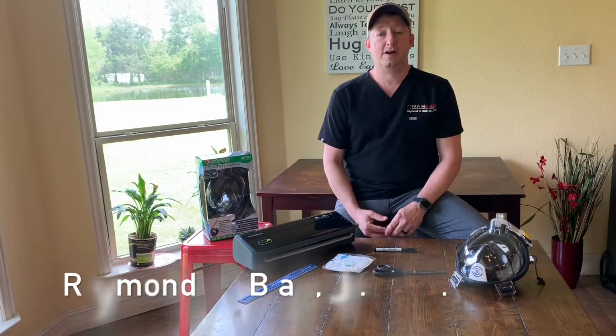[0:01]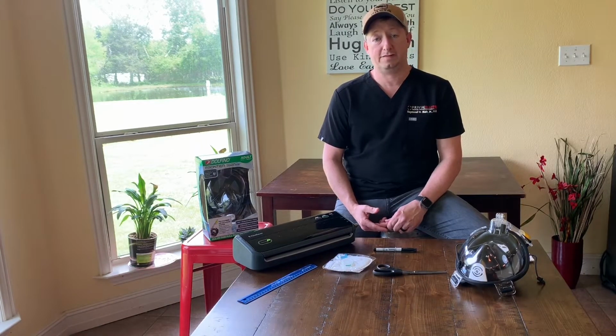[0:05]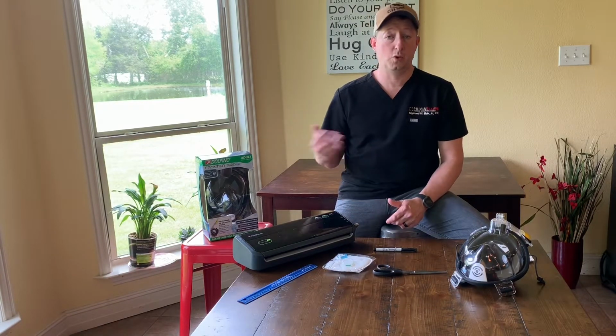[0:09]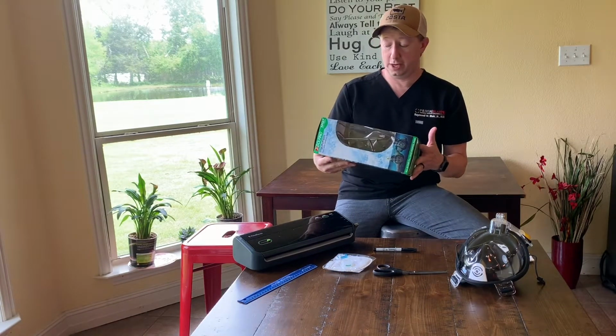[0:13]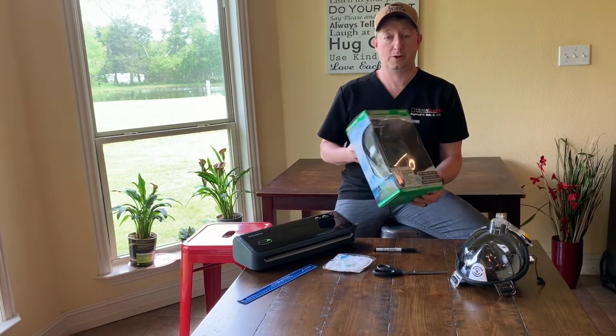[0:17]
I just wanted to show you what I'm doing to make my N95 mask last longer and how to make a reusable face shield out of a simple snorkeling mask. Basically, you can get this mask at Walmart. I got this one there for $35. I'm sure some other retailers have similar products.
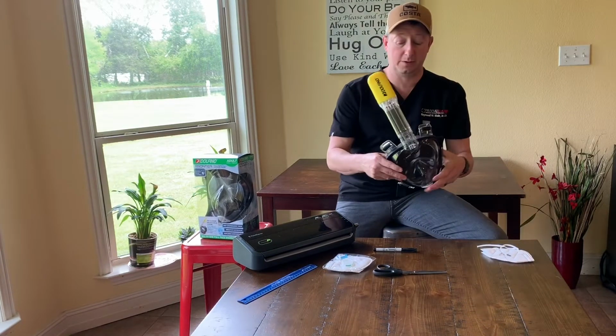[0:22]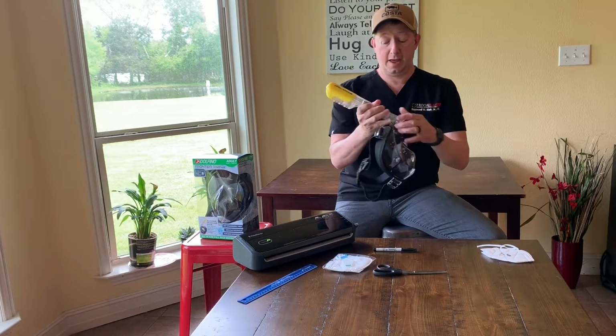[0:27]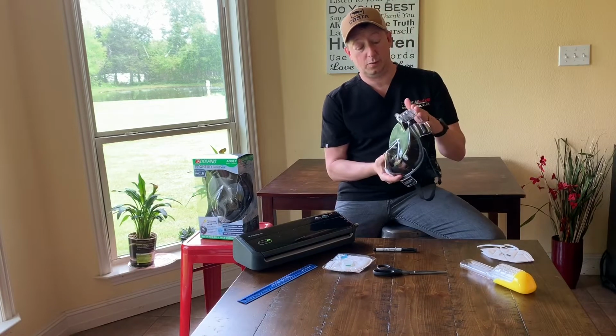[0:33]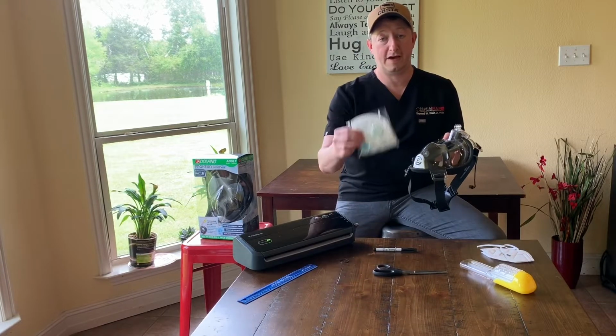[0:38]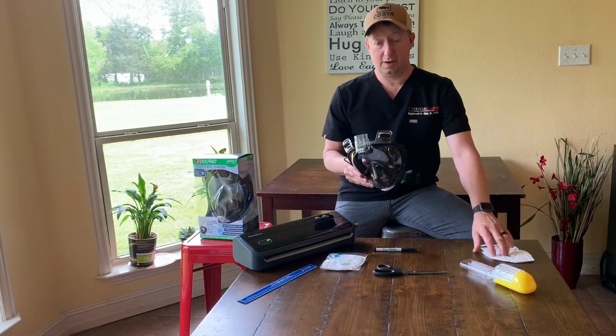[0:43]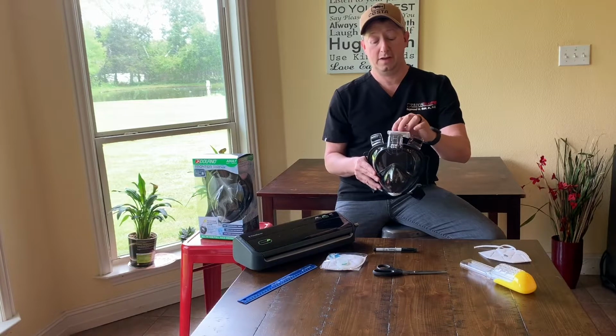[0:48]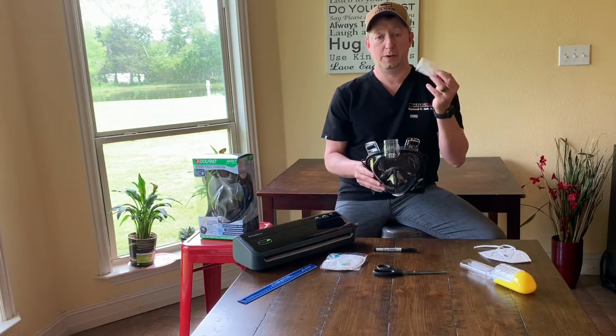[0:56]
These work great. If you take a look at this one that's assembled, you can see here's the snorkel. We never even assembled that onto the mask. And what we've got here is a mask where the intake chamber would be here at the top, and we've got a small valve similar to what you have on your N95 mask for whenever you breathe out. So all we're going to do is take our N95 masks and make them into smaller pieces so we can cover this, use a rubber band and or tape to hold it and make a good seal, and then you've got your mask and you're ready to go, and you can just simply replace this.
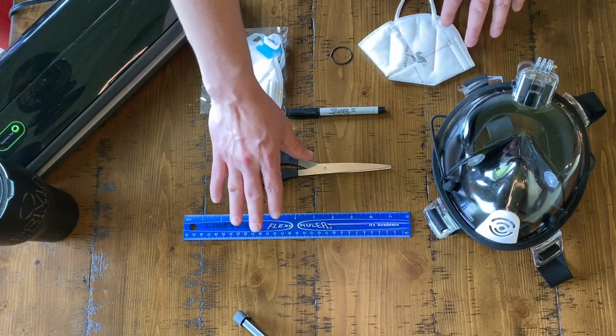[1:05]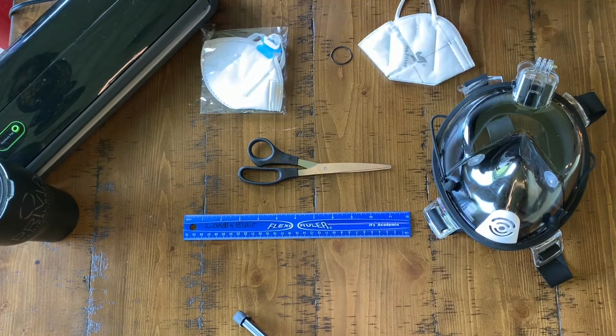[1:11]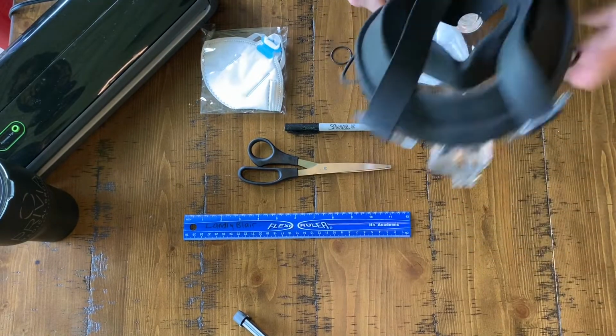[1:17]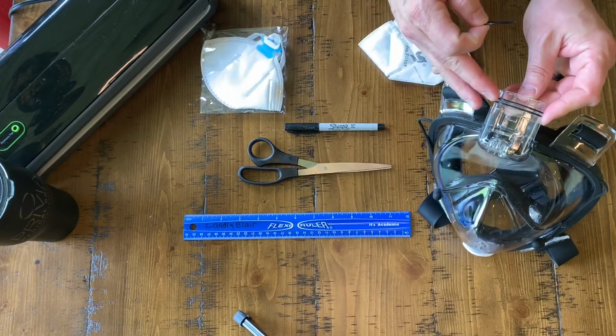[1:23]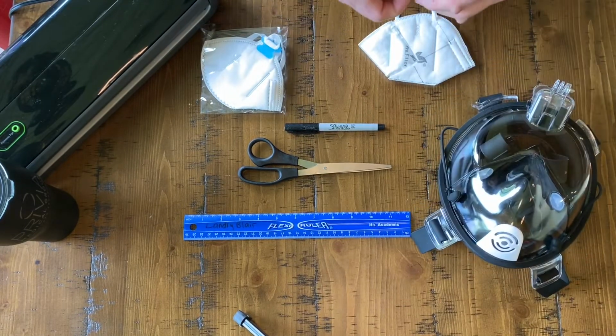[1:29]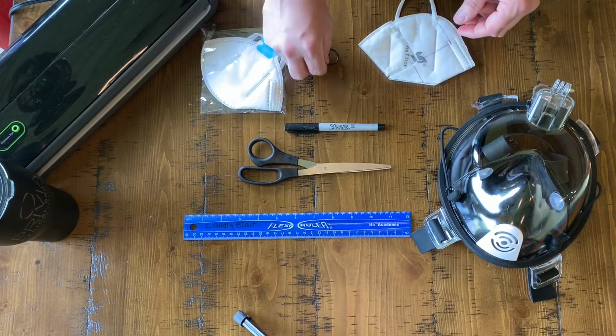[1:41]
I just want to go over a few things here that you might use to do this. Of course, you've got your N95 masks, a ruler, scissors, a felt tip marker so that you don't damage the mask. We want to preserve the integrity of the mask and not use a ballpoint pen if possible, and our snorkeling mask here. This snorkel mask actually came with these O-rings and some replacement O-rings, which are great for holding the piece of N95 mask over the air hole. You could use a hair tie or a rubber band or a tape. I'd recommend going ahead and wrapping tape around the edge of it just so that it doesn't come loose or the rubber band doesn't somehow pop off.
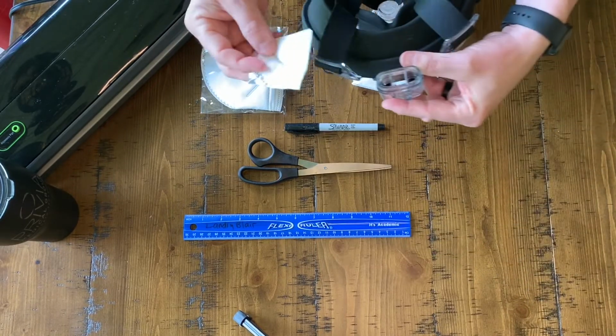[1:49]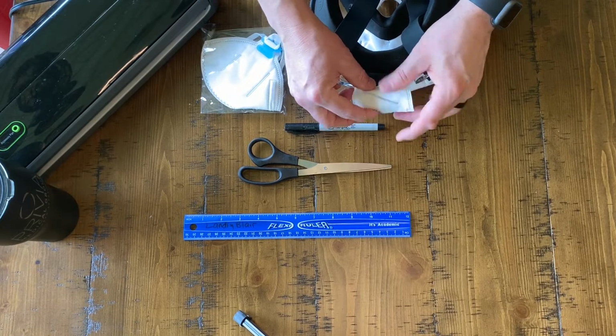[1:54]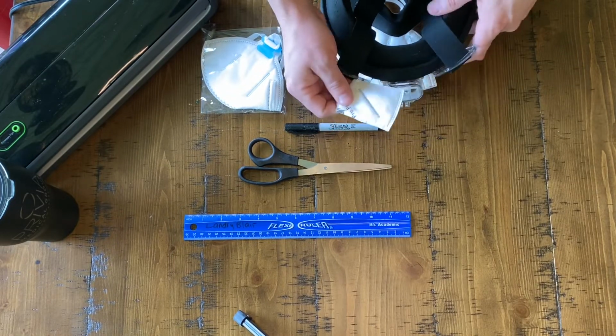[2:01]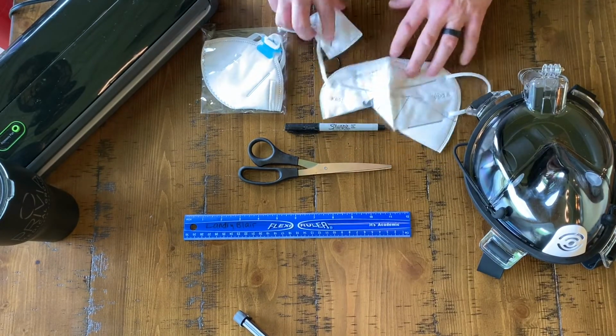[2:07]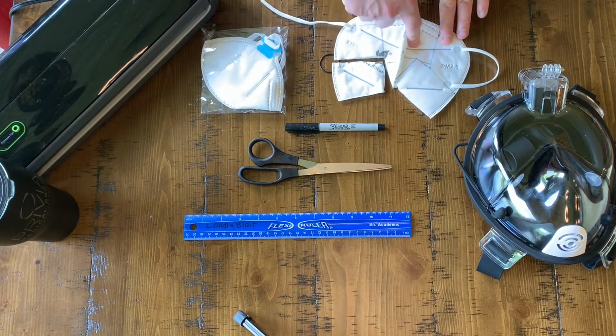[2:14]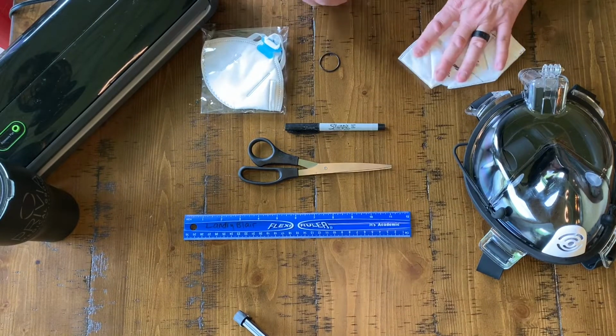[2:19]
So all we're doing is taking our N95 mask and figuring out what size piece of mask you're going to need to cover this. In this case, a piece here that's just about 2 inches by 3 inches will cover this one just fine. You could probably go just a little bit smaller than that here. And so that's what I've done, and then kind of laid it out over the mask and figured out here, if you look, with only cutting that little section there of the mask to open it up a little, we can make 1, 2, 3, 4, 5, 6 uses of this mask.
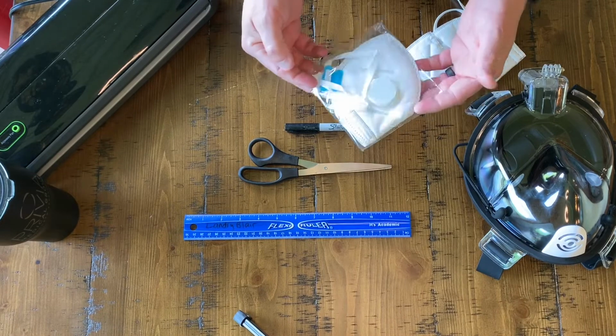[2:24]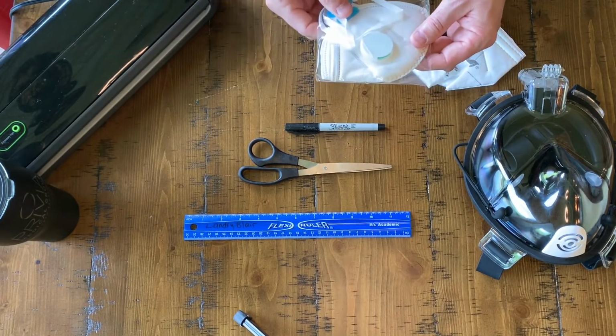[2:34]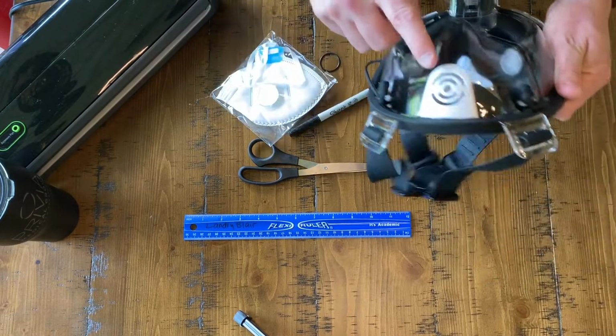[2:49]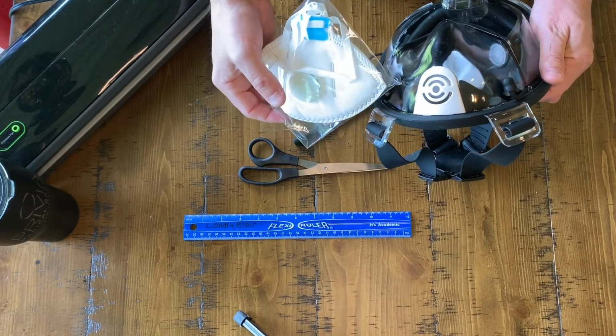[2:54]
Now, the mask that you may come across that I got from one of my construction friends has this breather valve on it. Basically, these are to let the air out whenever you breathe out instead of having it blow the seal loose on the mask and fog up your glasses and stuff like that. So you'll have to cut around this. You don't want to use that in this portion of the mask, and just use the most real estate that you can. And I'll just point out that this little section of this mask is pretty much the exact same thing that you have here. It's fine to leave that open. You shouldn't have to cover it.
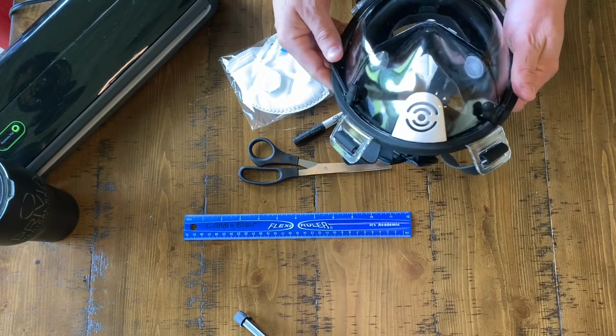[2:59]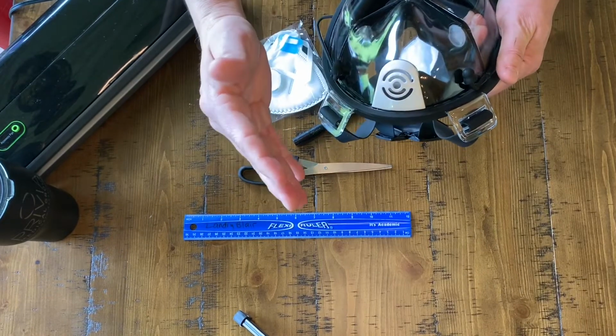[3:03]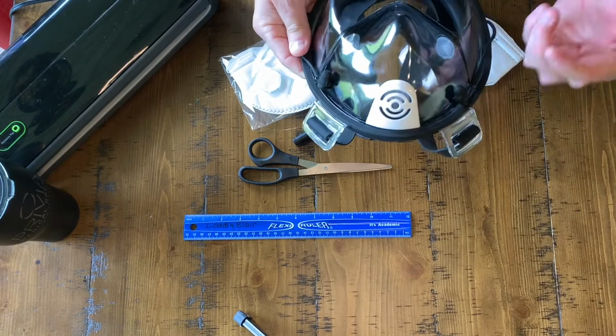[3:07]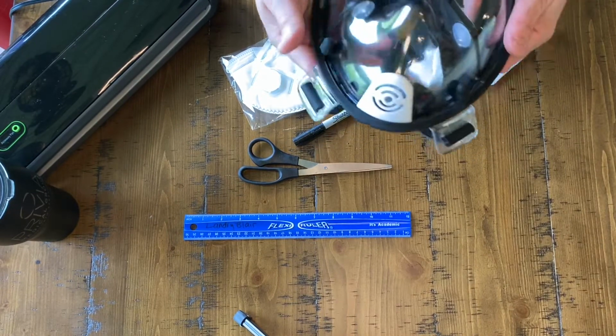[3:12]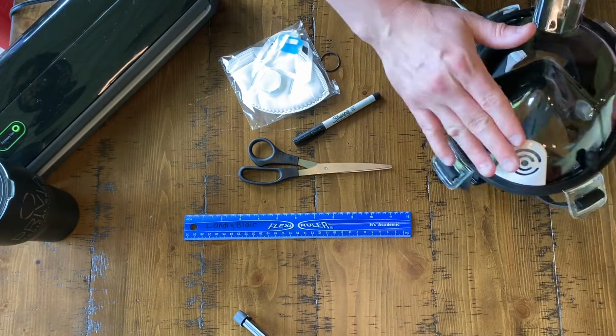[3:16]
You'll notice whenever you put this mask on and breathe, it's a one-way valve. It lets you blow out, but it doesn't let any air in. And in fact, that's how you can test it. If you try to suck in, you'll see that it kind of sucks the mask down against your face, and so you know you've got a really good seal there. So anyway, that part is just fine. You just want to do this part.
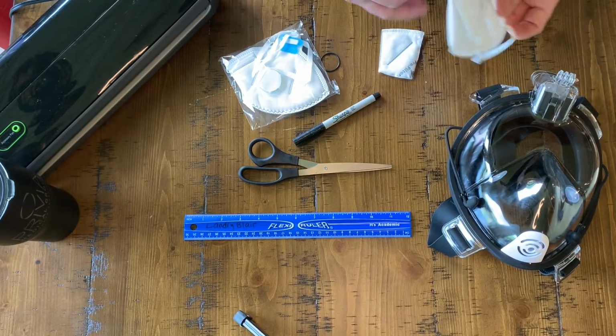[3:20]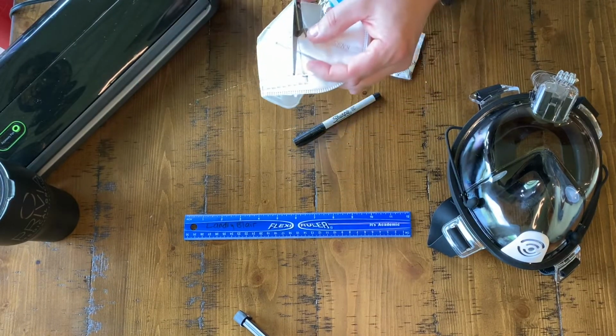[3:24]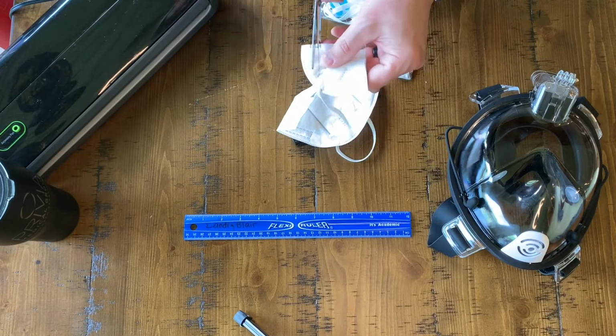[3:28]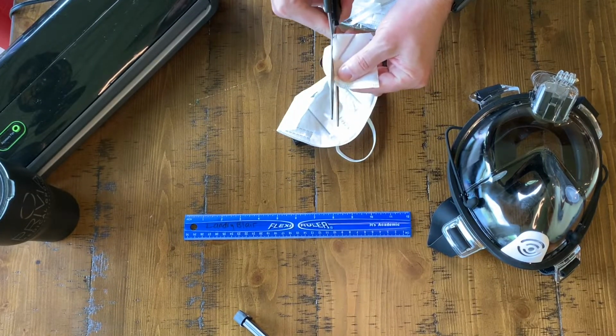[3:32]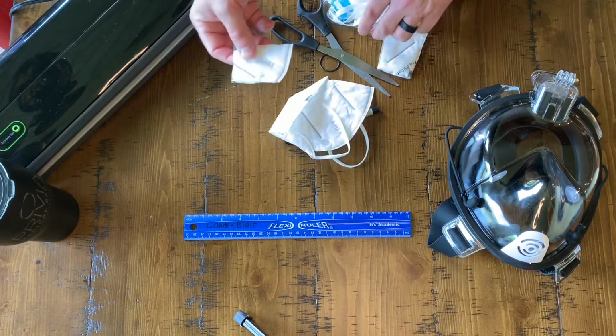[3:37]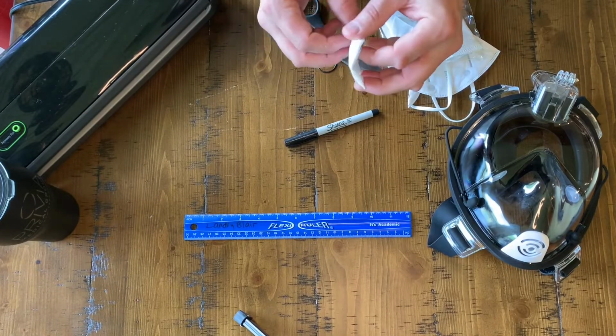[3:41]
Now, what I've found is as soon as you start cutting these masks, what we get is this, the mask kind of tries to fall apart on you. And this could become a problem, especially if you keep having to put this back on your mask after you clean it or whatnot. So you could use it that way if you don't have one of these sealers.
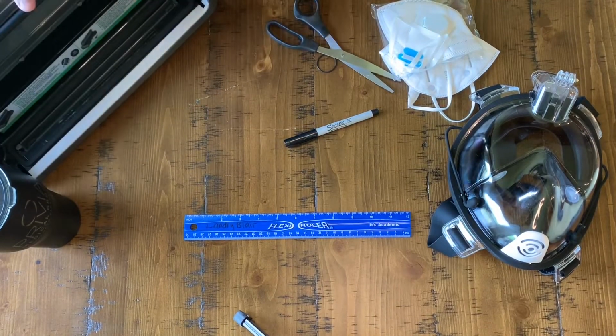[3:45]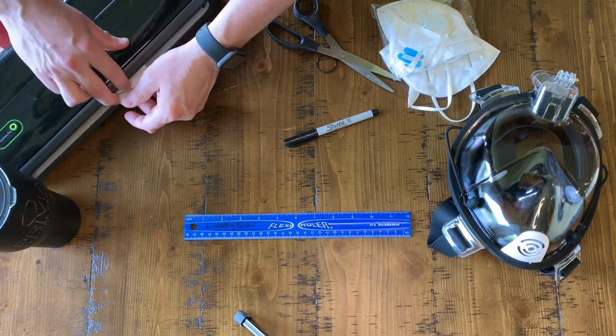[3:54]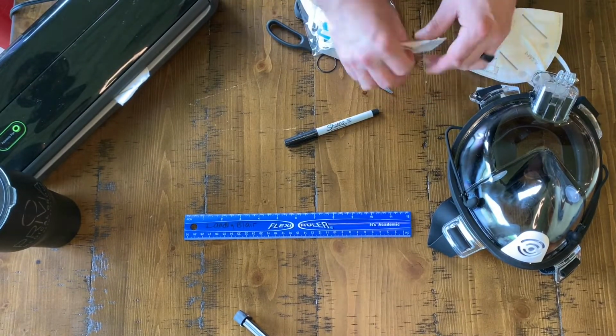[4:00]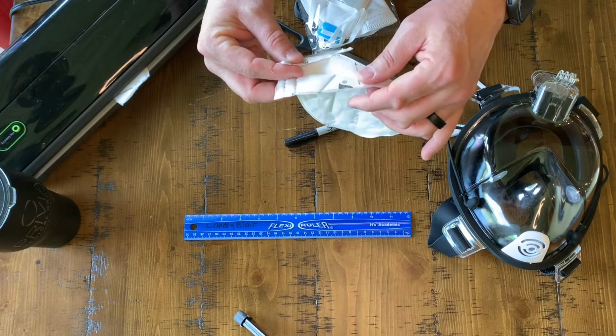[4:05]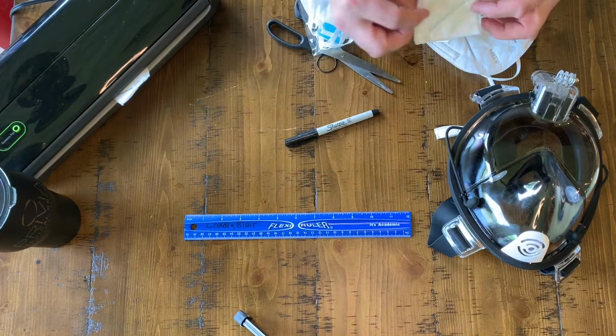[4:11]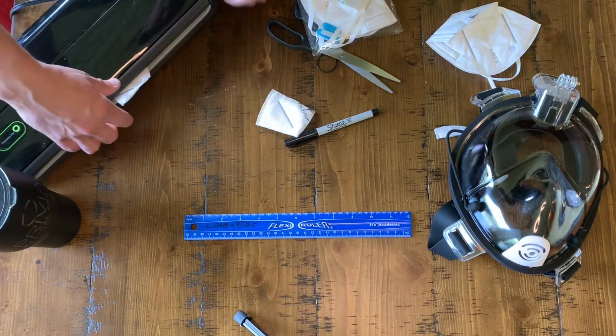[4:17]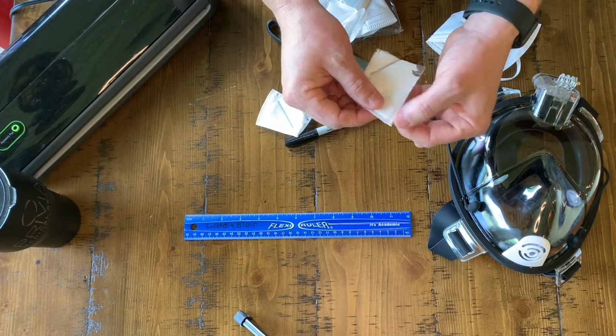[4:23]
But what I like about this is you don't have to use the vacuum part. This we have in the kitchen. You just set this over the seal part, close it, lock it down, hit seal, and basically you'll come up with a nice little sealed edge instead of this open edge of the quilted part of the mask. And that's kind of nice. I wouldn't seal any over the part of the mask that's going to be actually providing your filter, but just over the edges so that it doesn't fray and fall apart. You can see here, that one's now sealed, and it does a pretty good job, kind of like what you can see they do whenever they manufacture them.
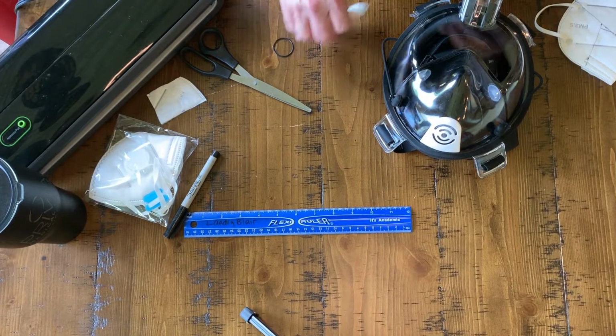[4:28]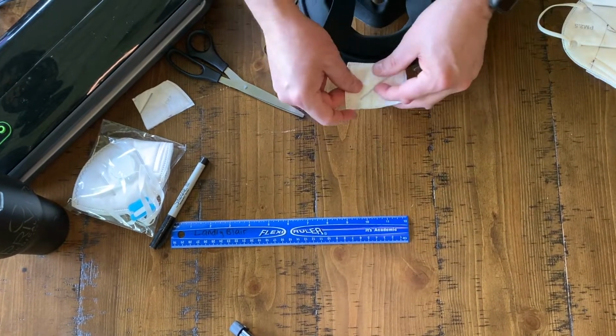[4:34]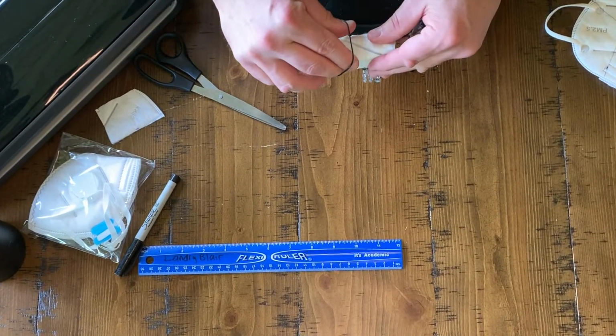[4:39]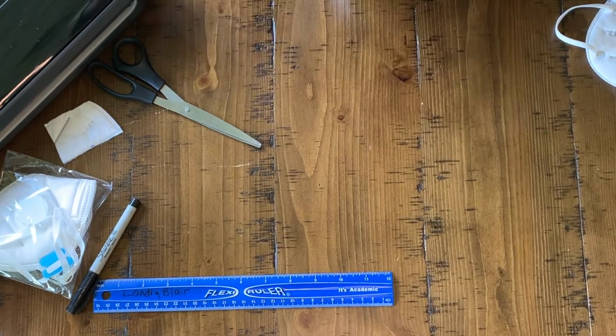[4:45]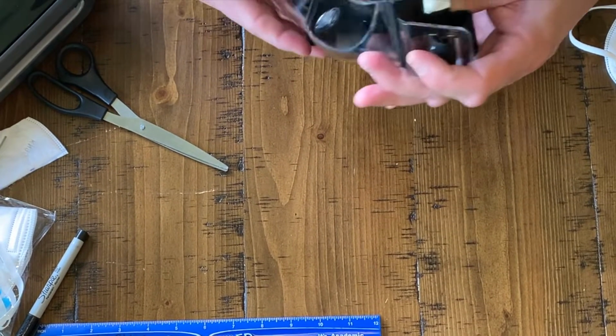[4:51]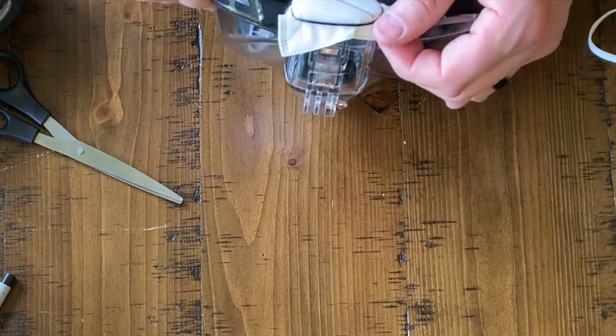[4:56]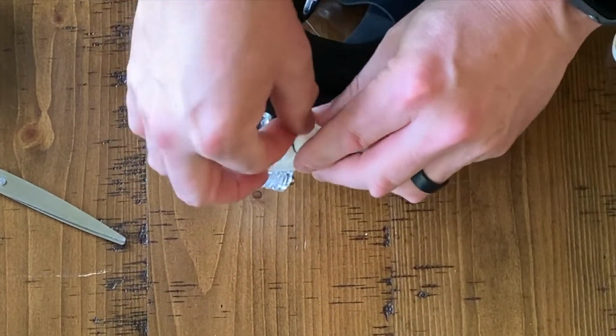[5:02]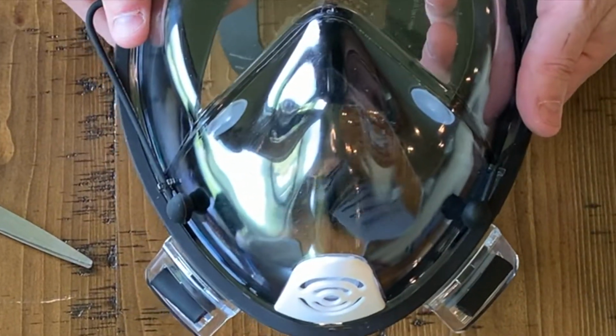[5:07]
So now that you've got your small piece of N95 mask sealed and ready to use, we just have to attach it to our mask. I'm using the O-ring that came with this set. You might want to use a rubber band or a hair tie if your set doesn't come with that. And you simply place it on there like so. Be sure that you've got all the edges under the rubber band so that it makes a good seal. This is where I would go ahead and maybe wrap a piece of tape around this, because if you were to tug on one of these, you could lose your seal on your rubber band, and you don't want to lose that. But once you get all that on there, then you're basically ready to go and take care of your patients.